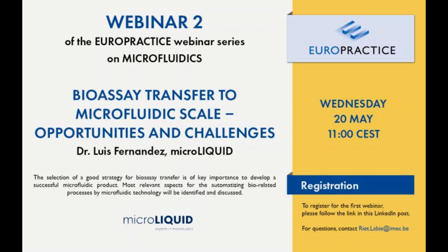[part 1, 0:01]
So good morning, everyone. Thank you for joining the second EuroPractice webinar on microfluidics. After the introduction session we had 2 weeks ago, we now start with more in-depth presentations related to the microfluidic breakdown parts that were touched upon last time. The one of today is about the bioassay transfer to the microfluidic scale, its opportunities and challenges, and will be presented by Dr. Luis Fernandez from microLIQUID.
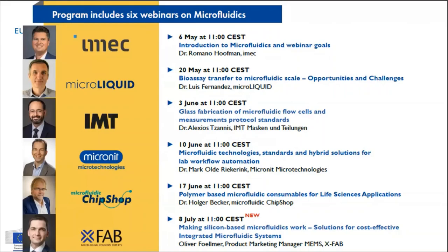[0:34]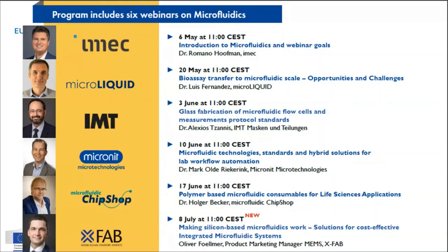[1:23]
Let me now introduce you to the presenter of today. Dr. Luis Fernandez is partner director and CTO of microLIQUID and has 20 years of experience on microengineering and microfluidic manufacturing. This includes in vitro diagnostic systems, drug delivery and tissue monitoring microdevices, cell culture microfluidic systems for organ-on-chip applications, and biomems. His research interests include both the generation of new scientific approaches to impact the biomedical field, as well as finding industrial and clinical solutions of biomedical research. He is also co-founder and partner of BeOnChip, a company dedicated to the development and commercialization of microfluidic devices for organ-on-chip applications. And he is partner of Ebers Medical Technology, a company dedicated to the development and commercialization of equipment for tissue engineering and organ transplantation.
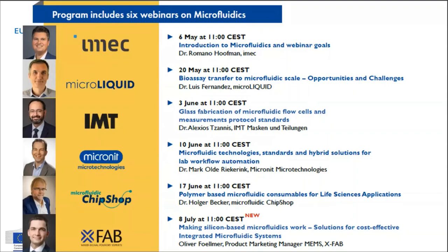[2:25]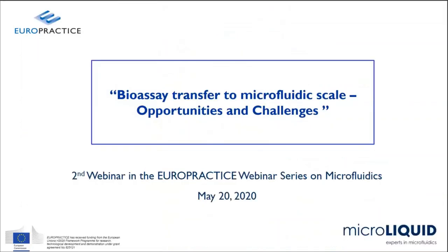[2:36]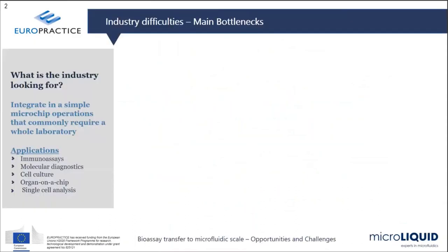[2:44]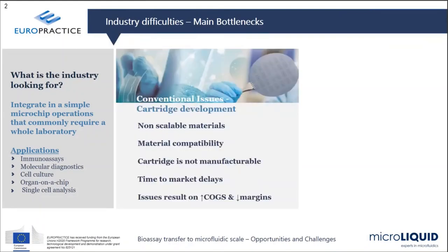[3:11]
It's a pleasure and honor to be here with you, sharing our knowledge on how to transfer a bioassay successfully to a microfluidic product. And this is exactly what we want to approach here. The question is, what is actually industry looking for when they're approaching microfluidics? And actually what we mean with that is that we want to integrate different operations which are commonly performed by a laboratory into a single device, a single chip for many different applications like immunoassays, molecular diagnostics, cell culture, and so on.
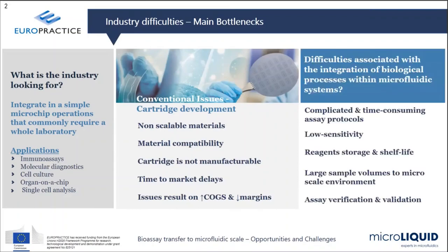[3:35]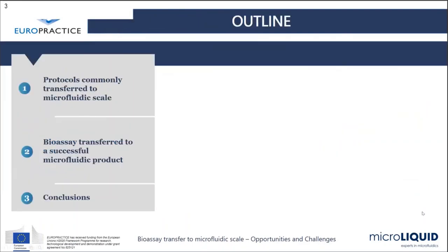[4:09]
There are conventional issues which have already been addressed for cartridge development, such as the use until now of non-scalable materials, how to get material which is completely compatible with the bioassay, with the protocol that we need to run in the cartridge, and how to manufacture that in a mass production way. But there are indeed difficulties which are not related to the microfluidics itself, but to the bioassay. So when we are facing the integration of a bioassay protocol within a microfluidic device, we also need to reduce the complication of the bioassay, to reduce the time, to increase the sensitivity, and to solve problems related with reagents storage and shelf life of those reagents. So this is what I'm going to address during the course of this talk.
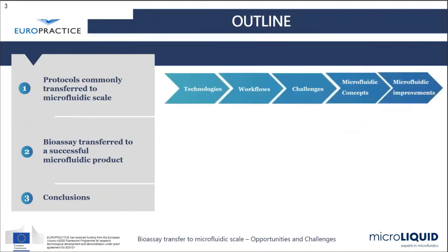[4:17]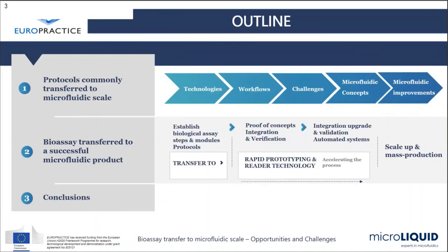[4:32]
I will divide the talk into 3 different parts. The first one would be addressing the different protocols and technologies which are being used in order to transfer a bioassay to a microfluidic device. That will be most of my presentation, like 3/4 of it. Then I will try to address where exactly this bioassay transfer is within the whole process of developing a microfluidic-based product, from the definition of what we want to achieve down to the mass production of the product and reaching the market, and then we will draw conclusions.
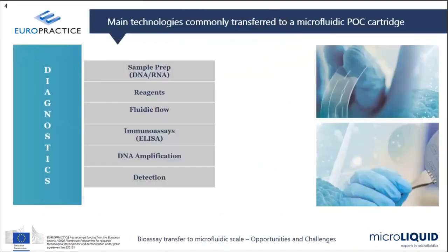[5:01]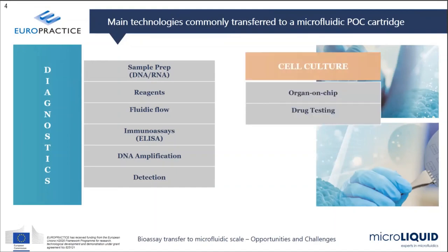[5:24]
So let's start with the different technologies that are available for the transferring of a bioassay. There are different applications. The most important ones are diagnostics. It requires a number of technologies which need to be addressed, like sample preparation, reagents storage, fluidic control, immunoassay integration or DNA amplification, and finally detection. But there are also others like cell culture related, some of them organ-on-chip technologies or drug testing technologies or human identification applications. But I will address diagnostics during this presentation. I think it's the most important field. I need to go somewhere to introduce the technology, and I think that's the best choice to go.
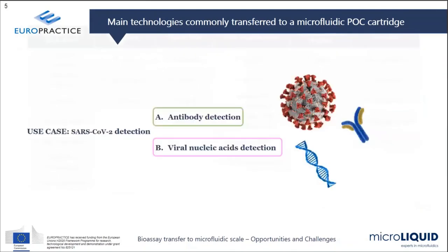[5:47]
So I will address during the course of my presentation diagnostics. And in order to make it easier to follow, I will not only just go through the different technologies which are being used for diagnostics, but I will try to bring two different examples. So during the course of my presentation, I will go through how I will make choices, as an example, how could we implement two different sensors based on microfluidics, one related with the detection of antibody related with COVID-19, and the other one is how to identify RNA material out of a sample, which is also very currently, well, it's kind of a hot topic right now.
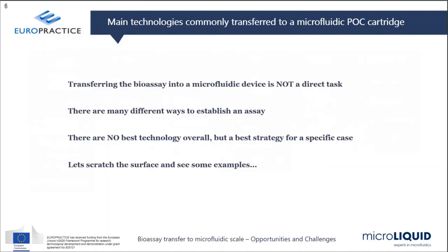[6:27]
So first, before I start, I want to introduce a couple of ideas in your mind. So first, transferring a bioassay is not a direct task. It's not like I have a bioassay, I want to do exactly the same thing that I'm doing in the laboratory, I want to do it in the microfluidic device. That can work, but it cannot work as well. So this is not the mindset that we need to approach when we are developing a microfluidic device. We need to take into account that we are changing the whole environment of the protocol, and it might require changes. So it might require that you have a protocol which is working in your laboratory and needs some kind of tuning or change of technology in order to reach a successful product in the microfluidic device.
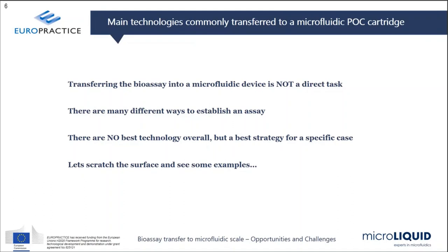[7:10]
And there are many different ways to establish a bioassay in microfluidics. It doesn't mean that when you are seeing a product in the market, it could not be done differently. Of course, it could be done differently. But there is always a better way, in terms of time consuming, final cost. So you need to be aware of all different strategies, to look at all different technologies which are available, to understand them all, and then to select the ones which are specifically matching best this application of use. And there is no best technology overall. So it's not like you need to go through immunoassay, which is an indirect way, or a direct way, or competitive. It's always related to both the bioassay and also the microfluidic environment.
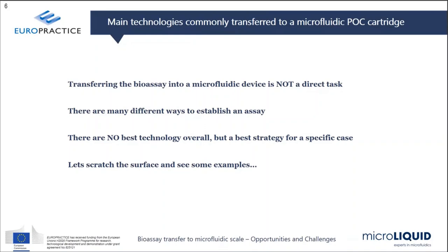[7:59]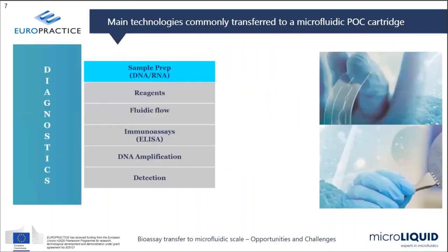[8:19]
So I will go through the course of this presentation about some of them more deeply. I will try to summarize as much as possible. I will just scratch the surface and show you some examples, but please take into account that these are just examples and many different choices might also be applied. So let's start from diagnostics.
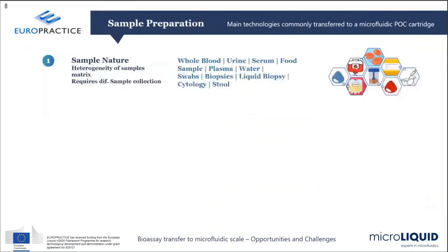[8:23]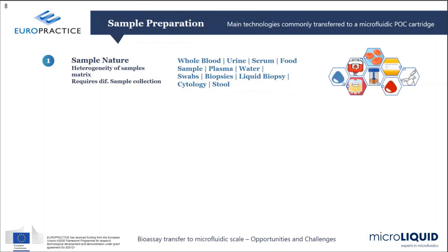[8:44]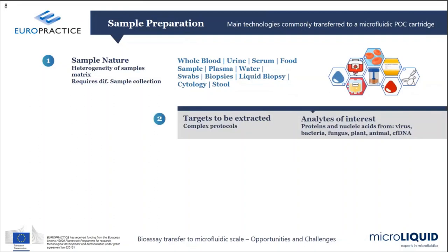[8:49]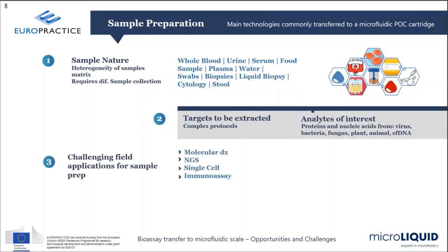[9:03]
So the first thing to do is sample prep. So when we are going to do the detection of something, the first thing of course to do is we need a sample which contains what we want to detect. And there are many different samples, of very different natures, which are heterogeneous, with different kinds of materials and molecules present. And we need to understand what is exactly inside, what are the different natures of samples. And then, of course, to completely identify which is the target that we need to extract from the sample, and then to perform the different protocols in order to get it from the sample that we already selected.
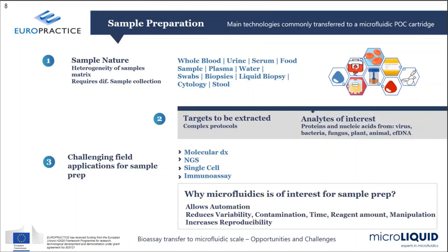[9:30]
There are different fields which are very challenging because of the heterogeneity of the sample. So when you work on molecular diagnostics, when you want to target RNA or DNA, it's not just this target which is involved within the sample. There are many different species or molecules which are also integrated into the sample, and you need to do things to extract exactly, specifically, that target of interest. And microfluidics brings into the sample preparation the automation of the whole protocol if it's required, but also the reagent amounts, because we are in microfluidics, the amount of reagents that you will require in order to perform this task of extracting the specific target that you want to select are reduced, and the manipulation is not required.
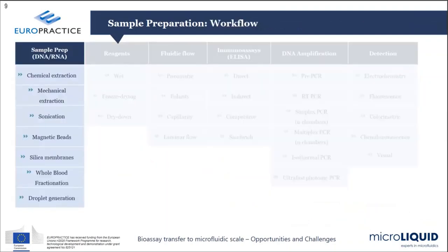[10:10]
Because you can automatize that, you can of course then also increase the reproducibility of the task. So when you are working on sample prep, there are many different technologies that you can apply. I mean, you have a sample, and then you can just use chemicals, for instance, to digest the cell in order to reach the DNA. You can use chemicals in order to breach the membrane and then make the DNA or RNA accessible. You can do the same thing by mechanical means, mechanical application onto the sample, and then breaking up the fungus or the cells or the bacteria that you want to reach.
You can also use ultrasounds in order to get it, or magnetic beads. Magnetic beads are tiny magnetic particles, on the order of a few micrometers in diameter, which are functionalized in order to specifically catch the target inside of your sample. And then, making use of permanent magnets, you can specifically trap these targets that you want to work with.
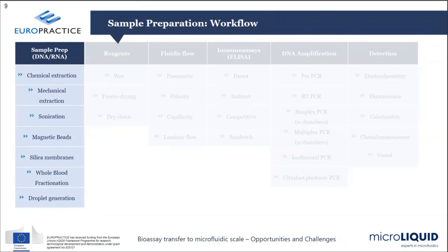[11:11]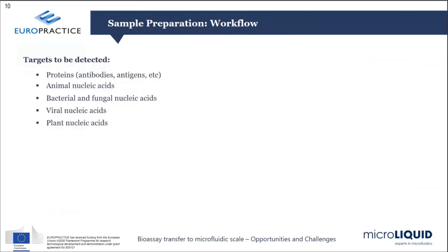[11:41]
Also, you can use silica membranes where your sample goes through and directly catches your target of interest, or you can use a fractionation of the whole blood, in case the blood is your sample, in order to, again, pick up your target of interest, or generate droplets which are catching specifically your targets, and also generating inside of the droplet the different reagents in order to perform the reaction.
So when you are working with sample prep, first identify what you want to detect, what exactly your target is. It could be a protein, it could be nucleic acids. Then take into account the heterogeneity of the sample that you are going to work with. Is it clean enough, or are there big cells, or is it all just composed of small molecules? Take that into account.
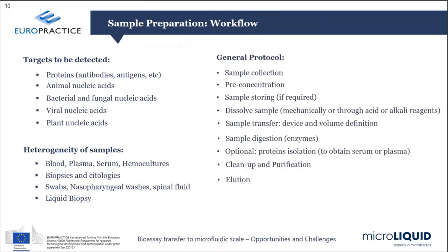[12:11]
And then you need to run a general protocol, which takes care of all the different natures of your sample. Maybe you need to collect it in a specific way, or you need to pre-concentrate it because it's very much diluted, or you need to store it. It might be that you also need to amplify it, or clean it up or purify it, or elute. You need to run a specific generic protocol, which is to be carried out in a microfluidic device.
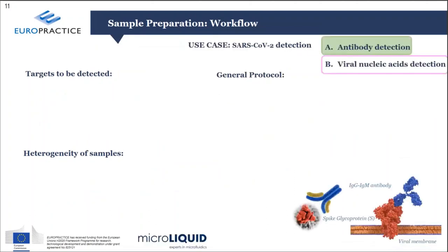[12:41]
So let's go for the examples. Let's start with that. How are we going to approach an antibody detection? As you know, when you have COVID-19, your body generates antibodies in order to trap the virus, and this is exactly what we are going to be looking for: the antibodies which would be present in the human sample, which relates to the presence of the virus in the patient.
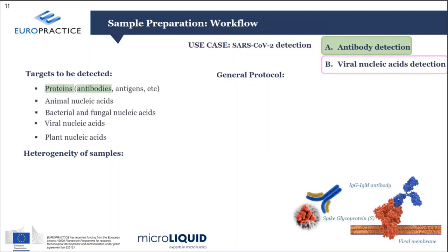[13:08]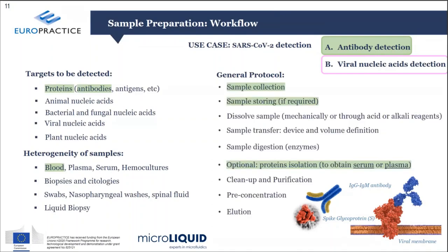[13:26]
And first, what we are going to target is the protein. It's the protein which is generated by the human when the virus is present in the patient. We can then select the sample. It could be a different one. Let's start with blood. So we will use a blood sample, and then we run a protocol.
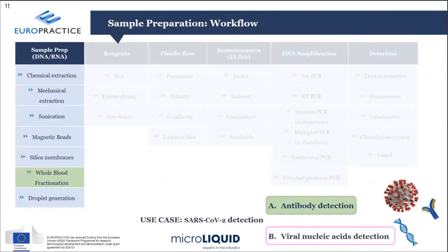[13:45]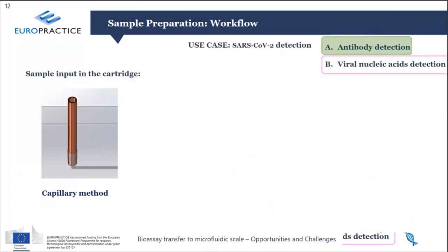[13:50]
A protocol that we can select as an example is: we collect the sample, we store it in a microfluidic device in order to perform the assay, and then we do the protein isolation. So we will catch the protein exactly from the general sample of blood. That would be, within the list I just described before, the whole blood fractionation methods.
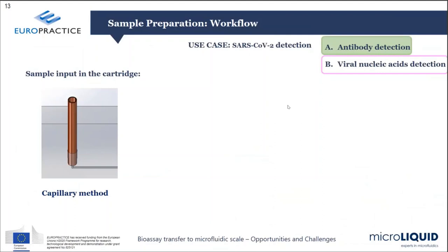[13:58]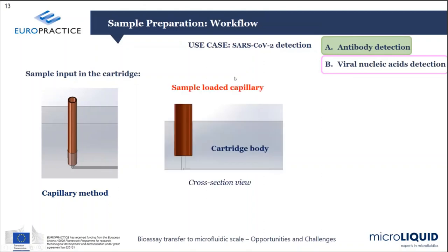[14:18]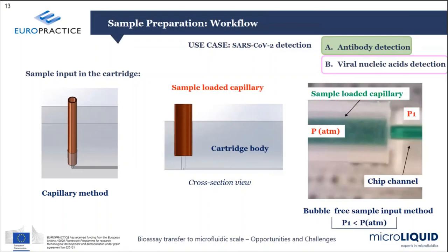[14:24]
One way to do this is to use capillary methods. There are capillary tubes available which, in direct contact with a droplet of blood, collect a specific volume of blood and integrate it into the tube. That could be easily integrated into the microfluidic device, and it therefore integrates the sample into the cartridge. There are many different things which need to be taken into account, how to integrate that successfully, how to make a hermetic input, how to avoid any bubble formation. But these are all technological approaches which can be completely solved.
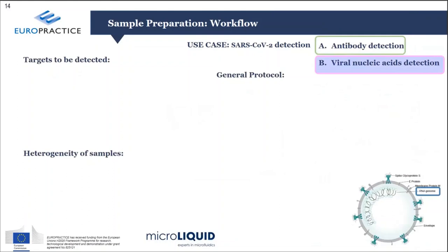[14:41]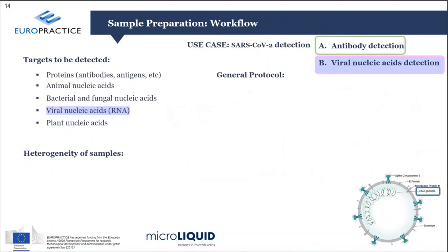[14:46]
And then if we move to RNA, of course, we go to viral nucleic acid detection. Here what we want to detect is the RNA material which is inside of the virus. So we are going to cut or detect the virus itself. So our target would be viral nucleic acids. And the sample that we can select, for instance, is a swab or a nasopharyngeal swab. That would be our sample, which is of a completely different nature than blood.
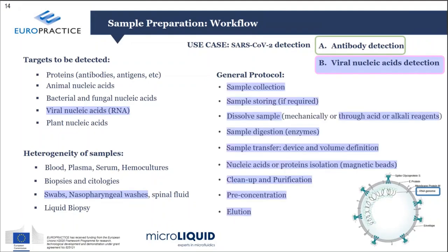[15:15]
And then, because we want to collect RNA which is inside of a virus, there would be a more complex, complete general protocol that we need to carry out. We need to collect the sample, and we also need to store it. We need to dissolve the sample in order to get access to the nucleic acid. We need to digest the sample again in order to cut it into pieces, then transfer that into the microfluidic device, and then amplify that, use magnetic beads in order to trap it in the microfluidic device, and clean it up and pre-concentrate it.
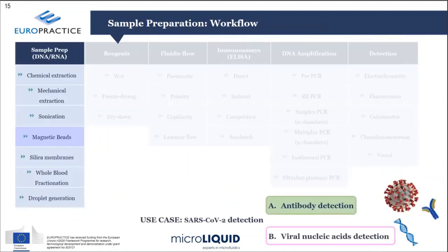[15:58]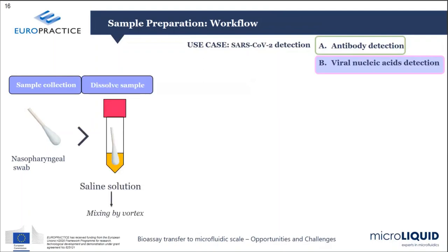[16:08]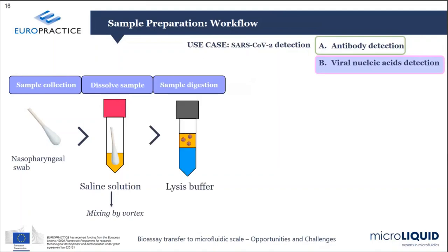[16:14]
So that would be our selection for RNA detection, magnetic beads. So how would that work in a protocol base? We will have a swab in order to collect the sample, and then we will mix it with a solution in order to get a homogeneous distribution of the sample within a liquid.
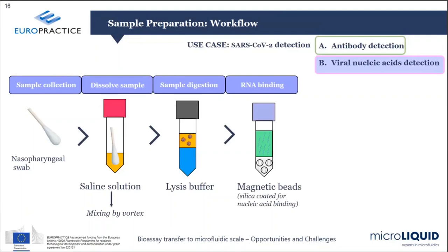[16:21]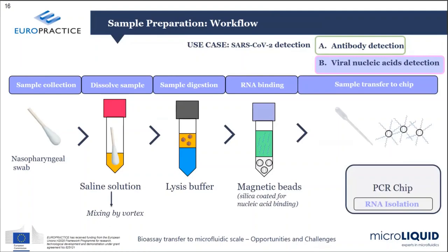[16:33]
We will then mix it with a lysis buffer in order to break the membrane of the virus and make the RNA accessible. And then magnetic beads will be present, which have been functionalized in order to catch any RNA material which is in the sample. Therefore, we can integrate this mixture into the microfluidic device, and then with the help of magnets, while the sample is going through, the RNA material already isolated will be caught and contained within a microfluidic chamber, where we will be able to work with it afterwards for the detection of the RNA.
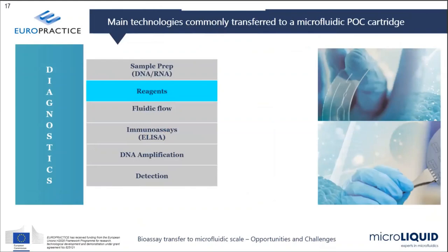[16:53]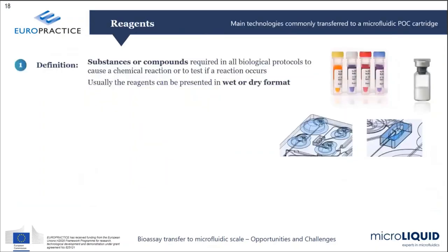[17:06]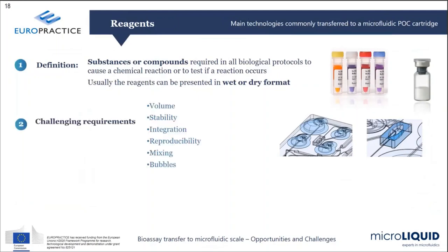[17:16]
So let's move now to the different technology that we will need next, which is the reagents. So we have the sample now, we have the targets, and now we need the different reagents in order to run the bioassay that we need to carry out with the microfluidic device. What is a reagent? It's just the different substances or compounds which are required in order to run a biological protocol, which is going to be used for the detection.
There are different challenges, like the volumes within microfluidic devices. They are small volumes that need to be controlled. They need to be stable because you want them to be integrated into the device, but they also need to be stable during the course of time. And you want them, of course, integrated, because otherwise you will need different bottles or other items around your chip, which you want to avoid as much as possible.
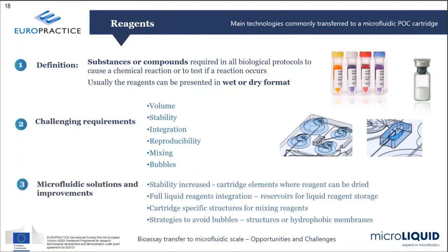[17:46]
So how is microfluidics bringing in a solution to that? The use of microfluidics allows you to make use of different methods, like drying the samples and then increasing the stability of these reagents. You can also have the capability to integrate the different liquids and the dried reagents within the microfluidic device, which makes a more simplistic way to perform the assay.
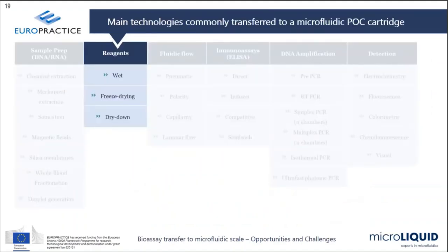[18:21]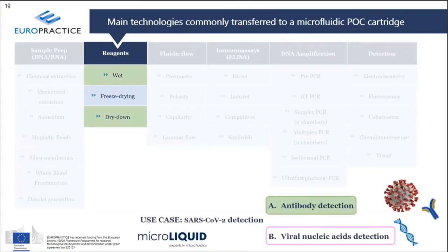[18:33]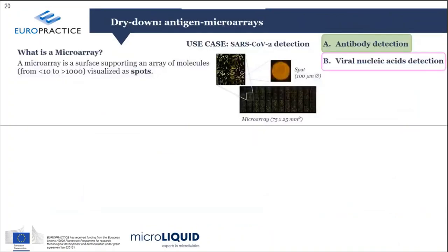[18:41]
There are mainly three ways of integrating reagents into microfluidic devices. There's wet, freeze drying, and dry down, and we will go through all three because we will use them in our example. So let's start with the antibody detection, in which case we can make use of both wet and dry down. And let's start with the dry down one.
So for the dry down, one of the clearest examples is the use of microarrays. What is a microarray? A microarray is an array of different spots, which include specific molecules which have been designed in order to trap our targets. And what is a spot? It's just a circle with a diameter in the order of 50 to 150 micrometers, containing many copies of the molecule that we have designed in order to trap our target.
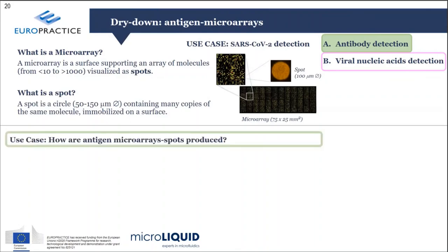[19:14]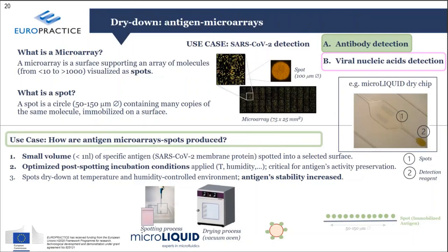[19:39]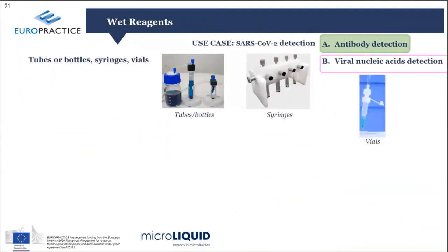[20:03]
So when we are going to use it for our example, as you see on the right, you see a chamber where we have deposited by automatic pipetting specific volumes of the molecules that we want to trap onto the surface, so that it will be ready to catch the antibody present in the sample. The way to do it, we first deposit it in liquid form, and then under specific temperature and humidity conditions, you are able to dry them down and have them present, as you see on the bottom right, so that when the sample goes through it, it will be able to catch specifically this antibody if it's present in the sample.
And then we will also make use of wet reagents. In many cases, you will need reagents for specific labeling or cleaning processes. You can run them using tubes, bottles, syringes, or vials, which are integrated into the point of care system, but externally connected. The volume of storage is high, so you can use them for several tests, and they are easy to develop. However, this approach leads to regular maintenance requirements in the point of care system, and a high risk of failure, also due to contamination.
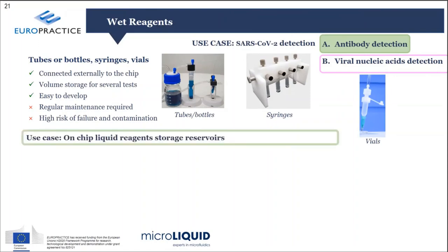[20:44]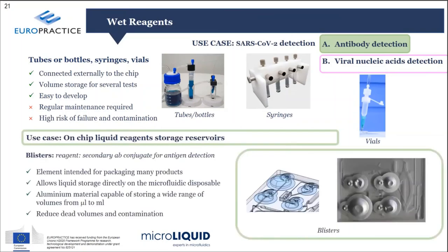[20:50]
So in our case, we are going to make an example where we don't make use of this, but we make use of blisters. Blisters are specific containers, mainly made out of aluminum foil, where they store specific amounts of liquids, which are required within the course of the microfluidic protocol. That allows a storage of the liquids which is hermetically closed, and it's opened exactly at the moment which is required in order to run the bioassay. So the point of care system opens up the blister in order to get the liquid available at the specific moment.
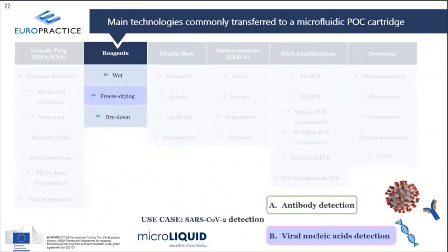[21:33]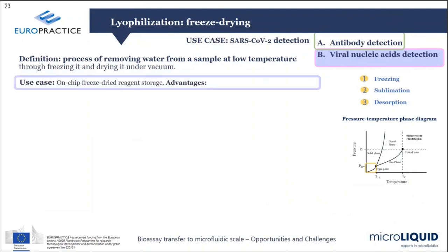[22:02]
So, the other one which is left is freeze drying. So what is freeze drying? It's just a different way to completely remove the water present in the reagent by making use of low temperatures. By controlling temperature and pressure, you are able to go from a solid state, freezing down the reagent, up to a gas state without going through the liquid, which gives you better stability of the reagent.
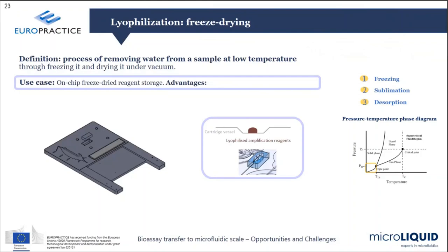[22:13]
This is how it is implemented into the microfluidic cartridge, which is complex. We mainly make use of specific vessels which integrate the specific lyophilized reagents that you want, so that you can reduce the cost of the lyophilization process, as the vessels are much smaller than the complete system. Then you just need to integrate these small vessels into the microfluidic cartridge, which is specifically designed for running the protocol.
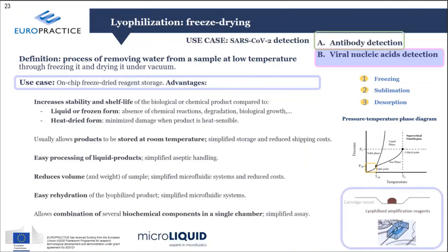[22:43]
There are many advantages to using freeze drying, even though it's more expensive than the conventional dry down. But as I mentioned before, the main one is the higher stability of the reagents performed with the freeze drying protocol, and also the capability of integrating several different combinations of biochemical components within a single chamber, in a single shot.
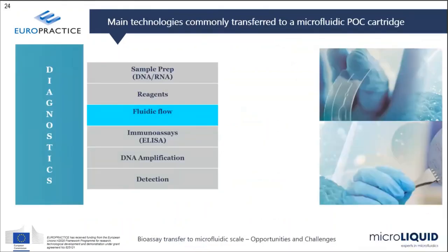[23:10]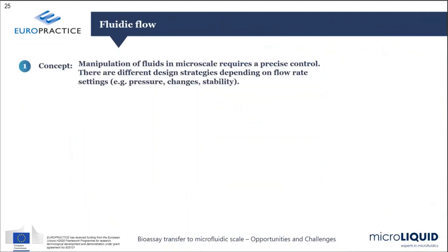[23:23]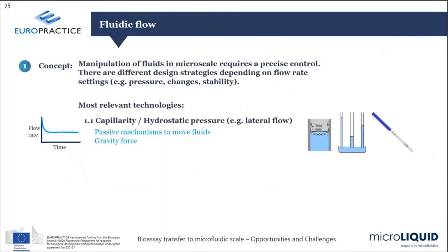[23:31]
Okay, so we have our targets, we have our reagents to go through the protocol, and now we will need fluidic control in order to run the fluidic protocol within our microfluidic device. First, the concept is how we are going to manipulate fluids in the microscale environment. There are many different ways to achieve that. Let's go through some examples.
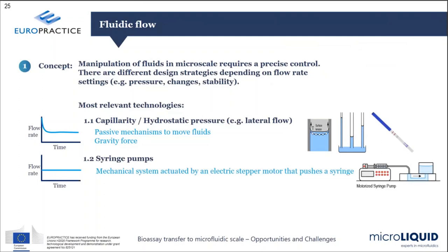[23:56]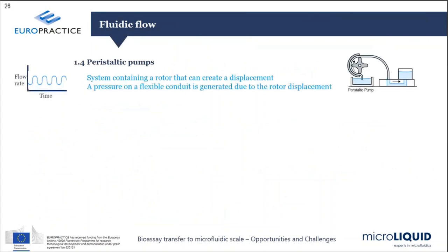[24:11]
First is capillary or even gravity forces. The capillary would be like the capillary tube I mentioned before, as an example of how to integrate blood into the microfluidic device, or making use of hydrophilic surfaces to drag your sample inside the microfluidic device. You could also make use of syringe pumps. You can make use of pumps to create vacuum at your outlet, and therefore drag your liquids through the microchannels. You can also make use of peristaltic pumps, which is not more than just a rotor applied onto a flexible tube in order to displace the liquids.
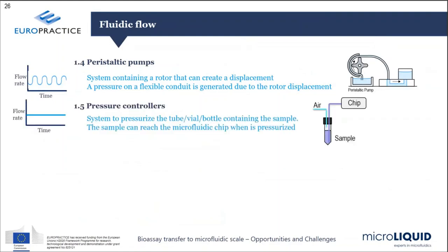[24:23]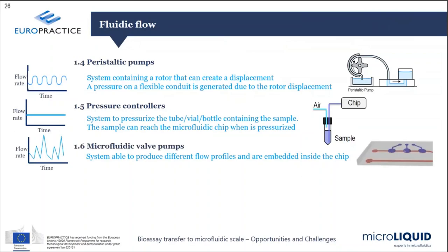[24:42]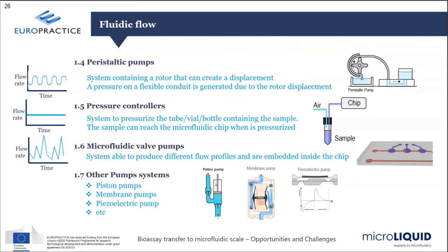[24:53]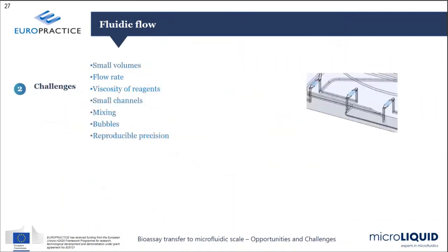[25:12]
Pressure controllers are just the control of the air pressure inside a specific compartment of the chip. By applying extra air pressure to this reservoir, the liquid gets pumped into the chip. Or you can even integrate microfluidic valves into the chip in order to get a constant flow through the chip. And of course, there are many other components that you can externally plug into your system, like piston pumps, membrane pumps, piezoelectric pumps. They all give a different profile, and they are all good. It's just about making the right choice for the specific bioassay you want.
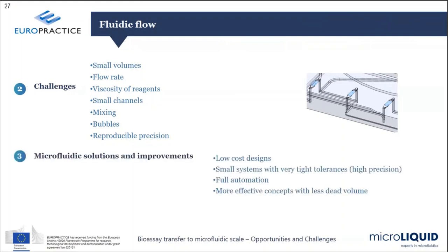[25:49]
The challenges are that you always need to work with small volumes. Flow rates are also very, very small, so they are very difficult to target in microfluidics. Also, because of the heterogeneity of the reagents, some samples are very viscous and not suitable for certain applications or certain pump control technologies. And you always need to track these liquids inside a small channel, which integrates fluidic resistance, which is not always easy to achieve. So microfluidics allows you to design, in a low cost way, different strategies for fluidic control, and it also allows you to reduce the tolerances on the small systems which are required.
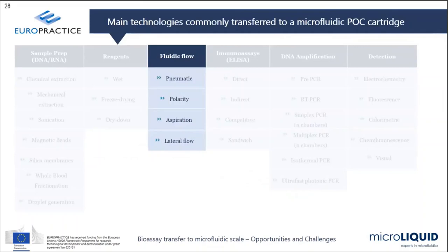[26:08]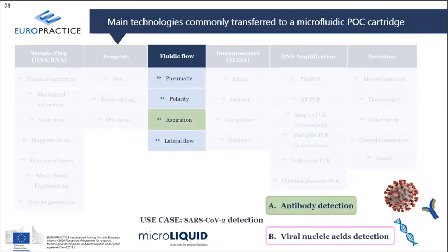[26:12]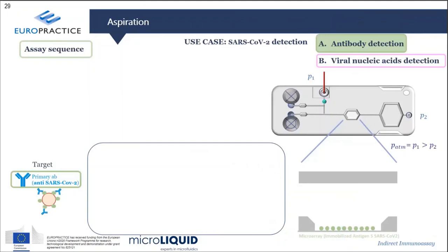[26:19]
So with all the different options available for fluidic control, for our case in antibody detection, let's take for instance aspiration. How would we implement that into a microfluidic device? You see now on the top right, we have a microfluidic device where we already integrated our capillary tube on top, for the integration of whole blood. We have two blisters on the left, which are the reagents that we will require.
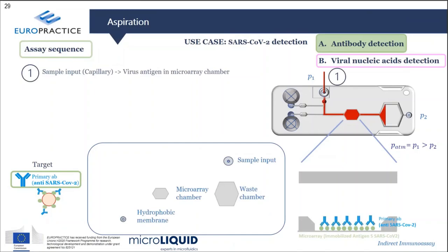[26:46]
And we have the dry reagent right in the chamber, if you see at the bottom right, where we have already deposited our antigen. So first, what we would do is apply a negative pressure at our outlet, which is at the right of the chip, that's P2, so that we drag the sample into our chamber of interest, where we have our antigen. And there, what we would do next is apply a pressure in one of our blisters, so that's a secondary antibody.
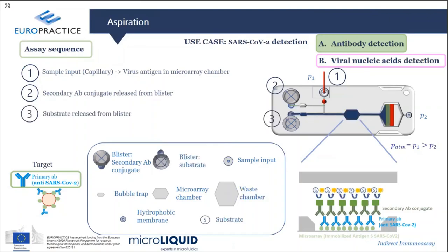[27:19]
It goes through the chamber again, which has been labeled, and it's specifically designed to be attracted to a different part of the antibody, which is accessible at the chamber. Finally, we will use the second blister to deliver substrate, which will react with the label that we have applied to the second antibody in order to perform our final detection.
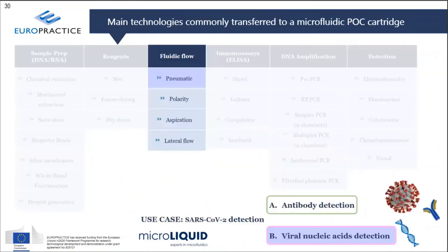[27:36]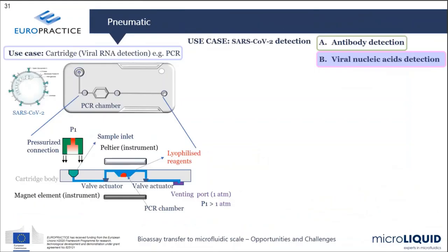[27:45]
So that would be an example way to integrate control into the microfluidic device. And then let's move now to a pneumatic approach that we will apply to the RNA detection of the virus. Here you will have a different option for the chip, where on the top left you have an inlet where we will apply our sample. As you see, from the point of care system we will apply a controlled pressurized air connection, and by applying a higher pressure of air, we will drive the liquid through the channel to get into the PCR chamber, where we will want to address our targets.
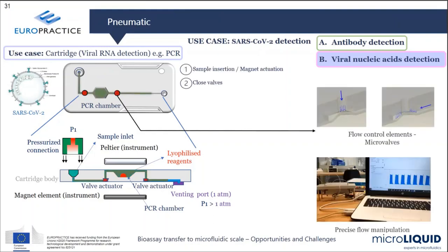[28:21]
We insert the sample into the chamber, and then we will also actuate valves at both sides of the chamber, which are in this case flexible membrane based. We will make use of magnets to trap the magnetic particles that we have used for the collection of our targets. And we will run our amplification protocol, which is based on thermocycling. Because we are going to use thermocycling, that will increase the pressure within the microchamber. And that's the reason why we need these two valves, at both sides of the chamber, to avoid the liquid in the chamber getting out of the chamber during the thermocycling process.
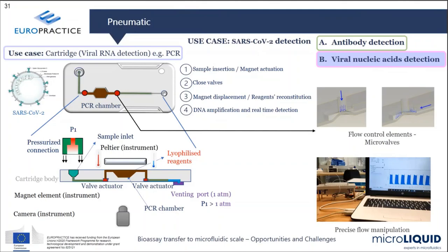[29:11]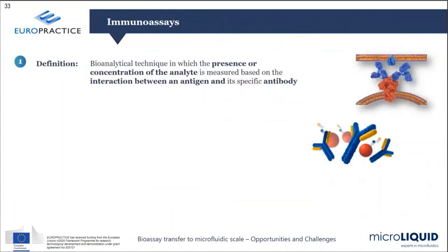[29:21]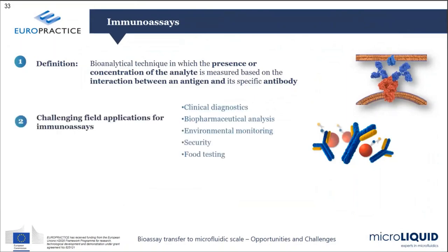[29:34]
So let's move now to the immunoassays that could be performed in a microfluidic device, the different options that we have. An immunoassay is by definition an interaction between two different molecules, the antigen and the antibody, in order to trap a specific target. It could be the antigen or the antibody, it could be both. And the challenging applications for immunoassay are not only clinical diagnostics, but also
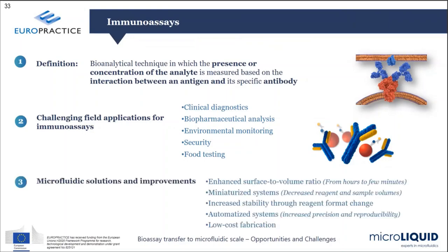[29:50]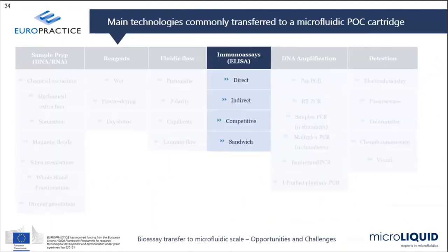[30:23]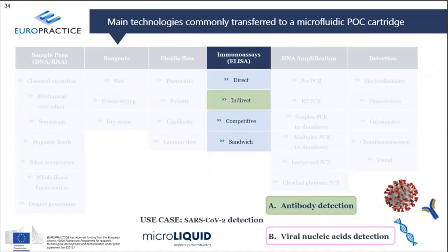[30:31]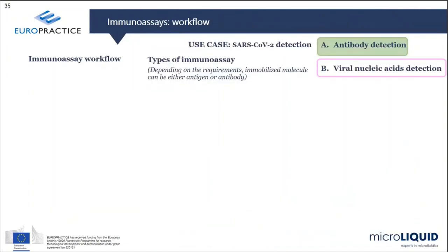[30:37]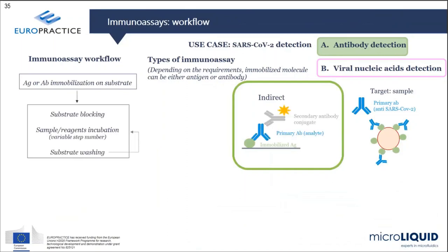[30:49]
We will address the indirect one through our antibody detection example. So first, as we described before, we will have our antigen on the substrate. And we want, as we mentioned before, to attract our target, which is an antibody. So this antibody will get dragged into the substrate and will be trapped by it. And then the second antibody, which was labeled and placed in the blister, if you remember, would be the method of detection for the presence of our antibody. That is what is considered the indirect way of performing an immunoassay.
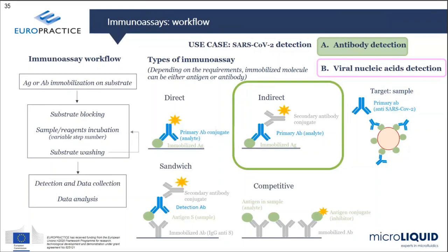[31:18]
But it's not the only one. There are different ways to do this kind of immunoassay detection, depending, of course, on whether you want to detect the antibody or the antigen. And they are different. It's not that one is better than the other. You need to reflect on what your bioassay is and what your microfluidic environment is, and then select the one that is better for your specific application.
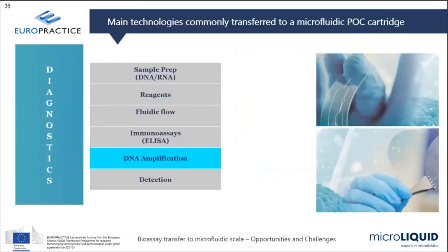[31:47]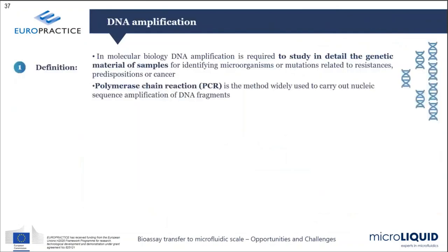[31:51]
Let's move now to the DNA amplification technology. DNA amplification is mainly performed by PCR, which is a method to multiply the fragments of DNA present in the sample.
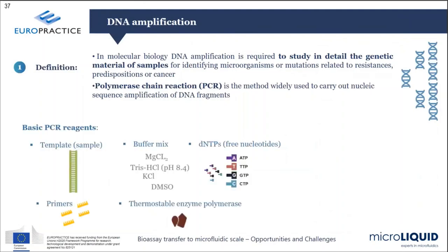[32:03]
This technique requires different reagents to be installed into the microfluidic device. First, of course, you need the sample. But you also need different molecules, such as the buffer mix, in order to enhance the reaction. You need, of course, the nucleotides, which are required in order to manufacture this DNA sample again, in order to amplify it. You need primers, which specifically bind to specific locations of the DNA that you want to amplify, so that you are sure that you are only amplifying the DNA fragments that you want, to check whether or not it's present in your sample. And then you also require the polymerase, which starts this reaction.
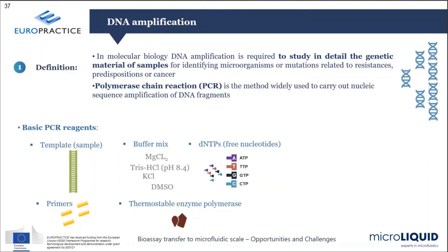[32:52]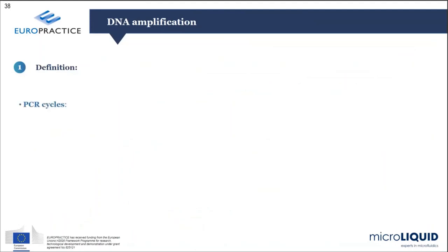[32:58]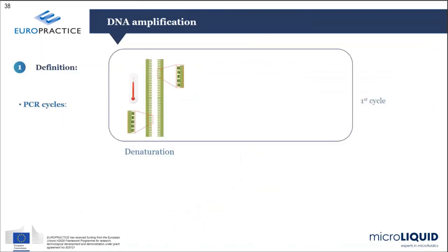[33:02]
So you need to mix all these molecules into a liquid and then perform the protocol. How is this protocol? As I mentioned before, it's a thermocycling protocol, so it requires changes of temperature. At the beginning, the sample is there, a double strand of DNA coupled together, and then you increase the temperature in order to detach this double strand of DNA.
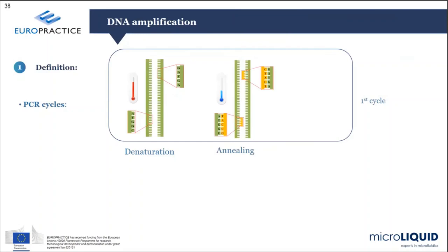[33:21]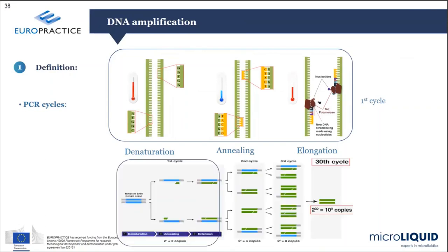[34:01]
Then by reducing the temperature, the primer is allowed to go to these specific spots, which have been designed to target specific parts of the DNA you want to detect. And only if the primers find exactly the complement of their design will they be able to be trapped onto the DNA. And then the polymerase reaction starts, integrates and fills in the rest of the strand by making use of the oligonucleotides which are present in the mixture. And by repeating this several times, you will have an exponential growth of the specific parts of the DNA which have been designed to be amplified.
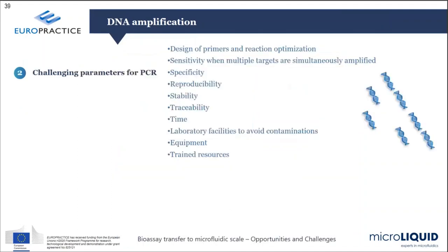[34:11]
So there are many different parameters which are challenging for PCR detection, for PCR amplification. First, of course, is the design of the primers. They need to be specifically designed so that they only bind to specific parts which are only present in your target and not in any other DNA or material which might be present in your sample, so that you have specificity. It also needs to be reproducible and very stable, so all these different molecules need to be stored in a way that they are able to work for different times.
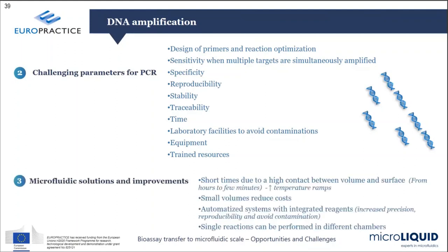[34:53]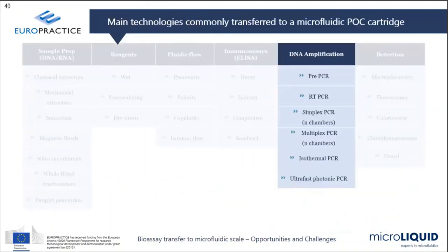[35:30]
And what microfluidics brings is, because of its nature, we make use of small volumes of liquids, which reduces the time required to heat up and cool down your reaction. Because the volume is reduced, the thermal inertia of the protocol will be lower, and then you will be able to reduce the time. Also, because of the small volumes involved, all the reagents that you require will be reduced, and that will reduce the overall cost of your assay.
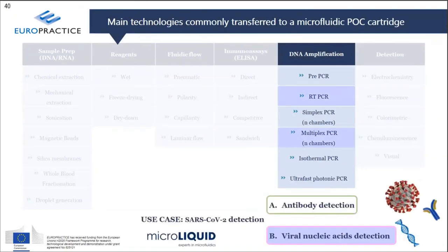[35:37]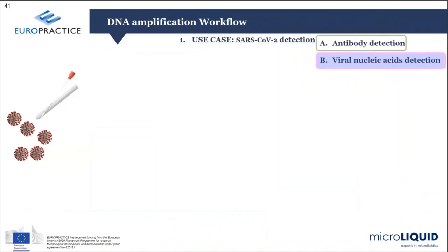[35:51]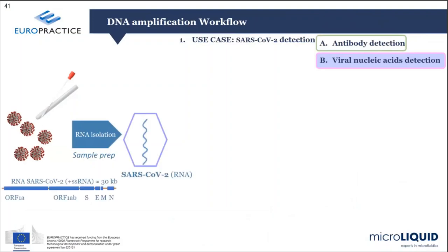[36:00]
So there are many different ways to perform the PCR protocol, but we will select one: reverse transcription kit-based PCR in order to perform the step from RNA to DNA, and then multiplex PCR in order to integrate controls. So let's look at how that would be. So we have our magnetic particles with the RNA coming from the sample, and we have isolated that in the microfluidic chamber. So now we have available our RNA that we want to amplify.
We will need to mix that with two different RNA samples. One is a human housekeeping gene, which is always present in human material, a human sample. And this is just to make sure that the sample was collected properly. And then you will also introduce an RNA internal control, just pieces of RNA which will always be amplified by specific primers, just to make sure that the thermocycling protocol was running correctly.
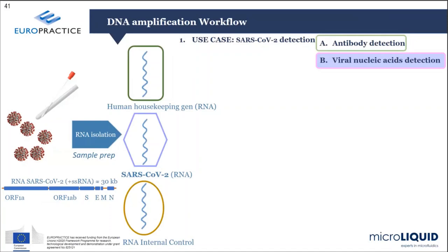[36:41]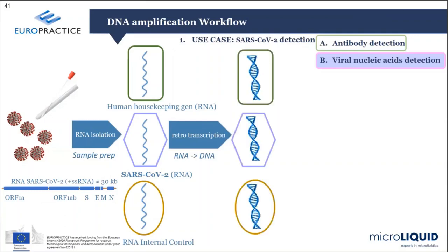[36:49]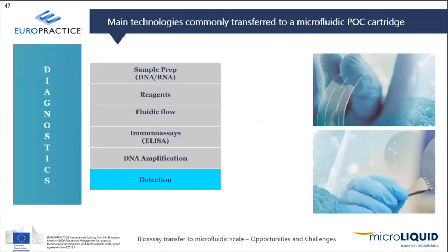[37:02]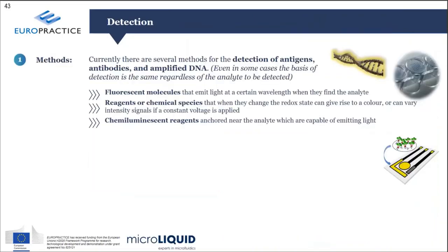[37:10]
So once we have mixed that, you make use of reverse transcription just to translate RNA material into DNA. And then once we have the DNA strand, we will run the protocol that I just described in order to amplify that, and get multiple copies of it so that it can be detected afterwards. And that goes to the final stage of the bioassay, which is the detection. There are many different ways of performing detection. The detection is just a way to integrate a transducer. We have performed the detection of something, and we want to carry a signal which is easily read by a point of care system.
The most effective ways to do that are making use of fluorescent molecules, which are capable of emitting a specific light at a specific wavelength once they have been excited by specific light from the point of care system. Also, reagents or chemical species, which are chemicals able to produce changes in color or voltage signals, or chemiluminescent reagents which are able to emit light when the reaction is taking place.
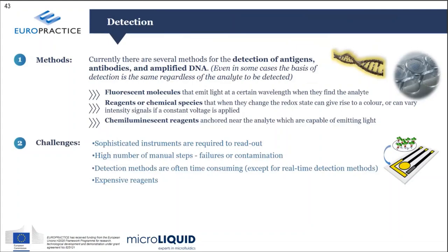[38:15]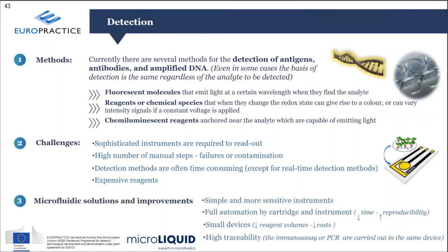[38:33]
The challenges here are that they mainly involve sophisticated instruments when you are making use of these transducers. They also require a high number of manual steps, and the detection methods are always time-consuming and require expensive reagents. So what microfluidics can really bring to the table is the simplification of these sensitive instruments to integrate, to provide full automation of the protocols, and to reduce the size of the devices.
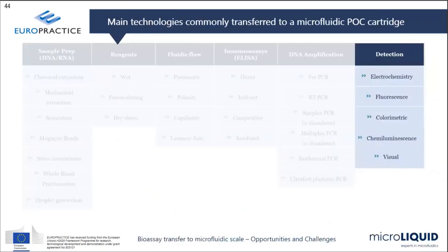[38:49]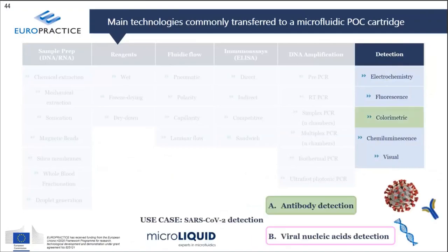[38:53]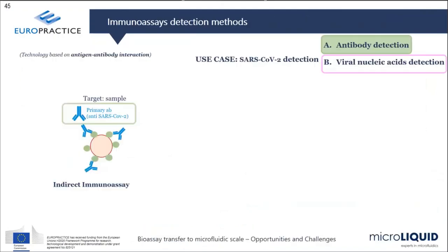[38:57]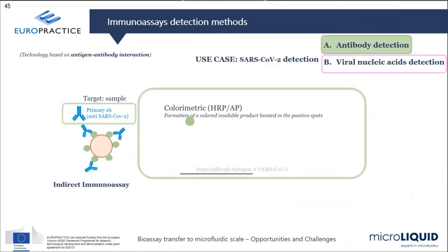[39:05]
So let's go through our examples, and from the different ways to detect, let's pick colorimetric detection for the antibody detection, and let's see how that would work. As you remember, what we want to detect are the antibodies. So we will have our antigen located as a dried reagent on our substrate. We will then integrate the sample and the secondary labeled antibody, which carries an HRP molecule, which is known for generating color in the presence of a specific liquid substrate. So in the end, you will be able, by optical means, to check whether the result is positive by checking whether or not there was color at the specific locations where the antigen was located by the dry-down method.
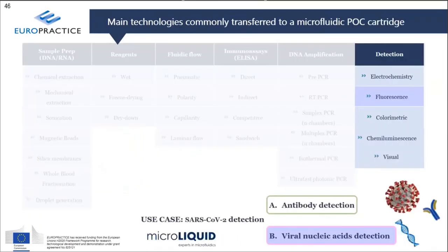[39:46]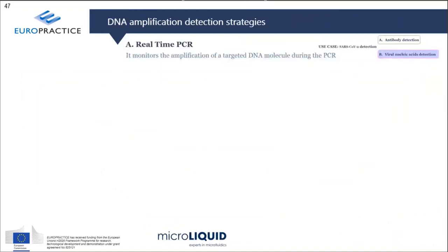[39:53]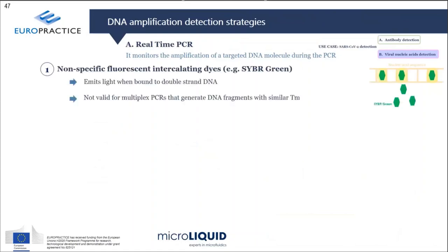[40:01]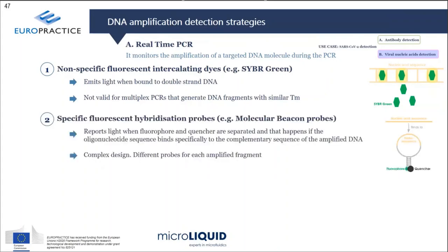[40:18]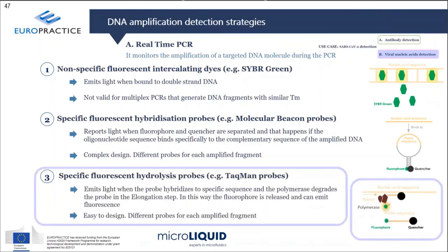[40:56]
And now let's go to what we could do for RNA detection, and let's pick fluorescence for this case. There are two ways to perform fluorescence detection in a PCR. One is what is called real-time PCR. Again, there are different ways to integrate that. One is to integrate non-specific fluorescent intercalating dyes, which are specific molecules that bind to DNA fragments present in the sample. Or you could also make use of what are called beacon probes, which are molecules integrating both a fluorophore and a quencher, which traps all the light coming from the fluorophore. The binding between the two is made by a probe sequence that specifically fits the DNA fragment which is going to be detected. Or what are called TaqMan probes,
which could be, for example, the one of choice for these applications. A TaqMan probe is a molecule which puts together a fluorophore and a quencher. Only in the presence of many copies of the target does the probe sequence bind to the DNA and, as the polymerase chain reaction goes through it, break this molecule, so the fluorophore is free and the light coming out of it is available for optical detection by the point of care system.
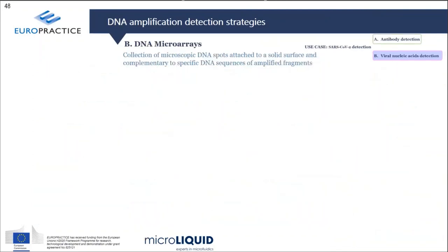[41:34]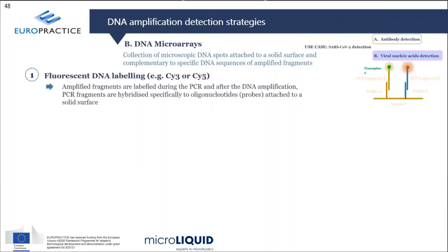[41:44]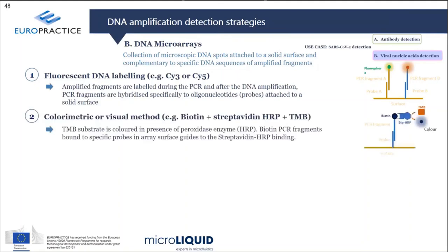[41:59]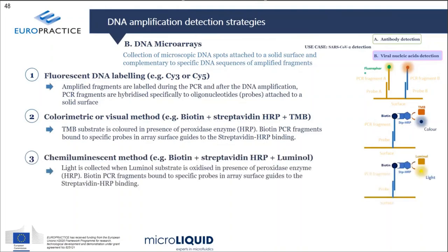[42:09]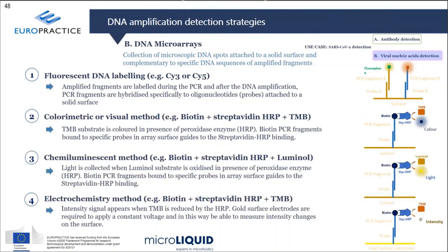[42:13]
You can do the detection not only by real-time PCR, but also by DNA microarrays. We could integrate probes which specifically bind to the DNA material that has been amplified by the PCR, and then label these specific molecules with fluorescent DNA probes. Or we could again make use of molecules which provide a specific color in contact with a specific substrate, or molecules which emit light in contact with a different substrate, or provide changes in voltage and current by redox protocols.
All these are different ways of performing a detection, and it's not that there is one best, it's just one which is better for the specific application that you may require. What is important is that you know them all and you know their advantages and disadvantages so that you can select and pick the one which is best for your specific application.
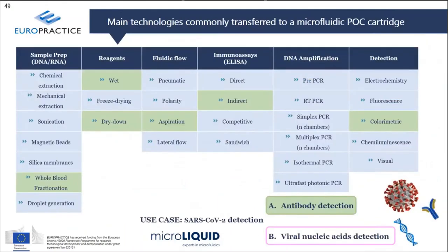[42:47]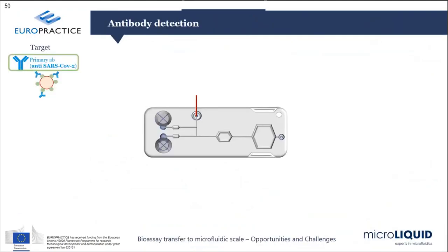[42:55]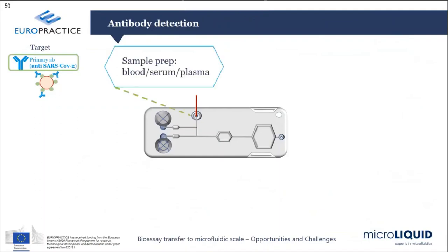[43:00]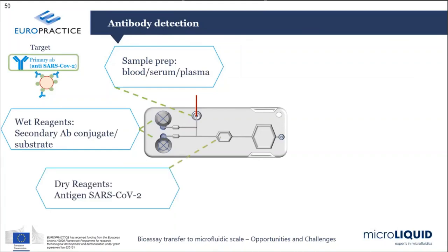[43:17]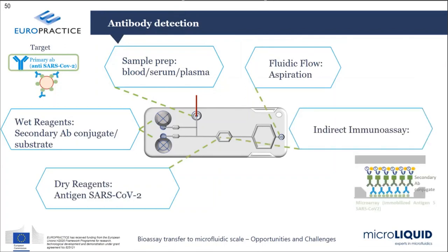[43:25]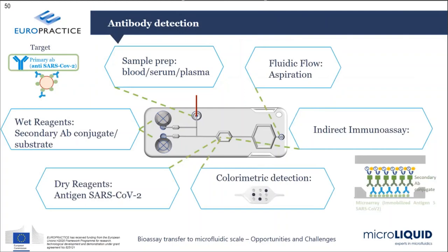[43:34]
So let's summarize the whole protocol. What we have chosen for the antibody detection, for instance, let's go through the whole protocol. We have this chip as an example, where we will first integrate our sample, which is whole blood, into the microfluidic device, making use of capillary tubes. We will have wet reagents, which will include the labeled secondary antibody and the substrate in order to perform the detection. And we have a specific chamber which has integrated dry reagents in order to trap the antibodies. Now, making use of aspiration, we can integrate the sample and then the second antibody and the substrate in order to perform the specific bioassay, and then finally detect by optical means the color of the bioassay reaction.
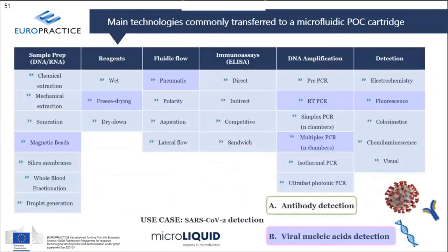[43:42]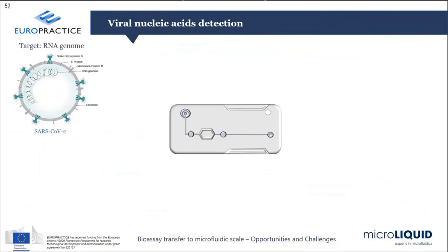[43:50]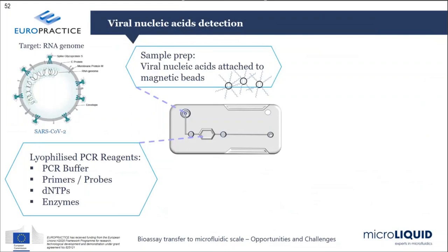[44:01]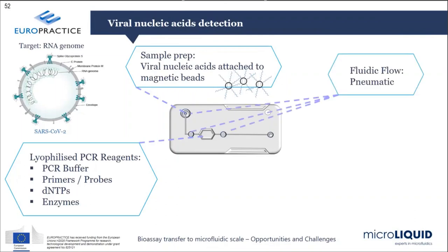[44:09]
And then let's summarize what we did for the RNA detection. That is with the example of the chip that we will have, where we will integrate first the magnetic beads which already integrate the RNA from the sample preparation. We have a specific chamber which already integrates lyophilized all the reagents required for the PCR amplification that we discussed before. And we will have these two microvalves in order to make sure that the reaction takes place without spreading the liquid through the chip.
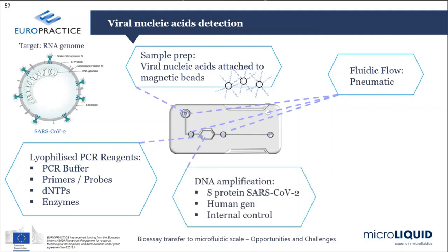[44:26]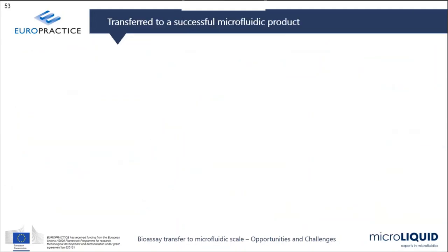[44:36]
And also we make use of air pressure control in order to drag the sample into the chamber. We will run the DNA amplification by thermocycling, and then we will make use of TaqMan probes in order to perform an optical detection. So these are examples of the bioassay.
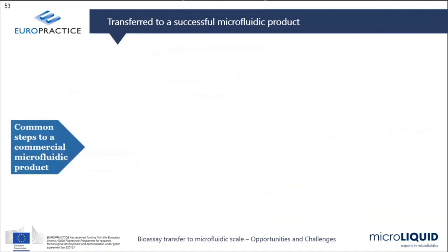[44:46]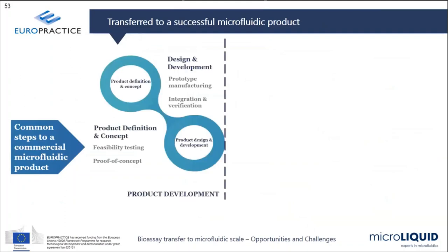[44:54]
Let's move to the second part of the talk, where we are going to discuss how these are integrated into the normal course of product development. So when you are running a product development in microfluidics, first you need to do a product definition and concept phase, where you state what the proof of concepts are, state what the bioassay is that you want to carry on, and perform a specific test in order to develop it.
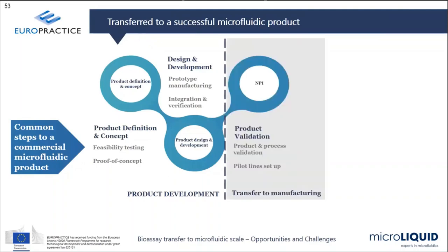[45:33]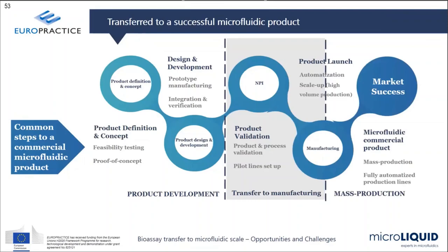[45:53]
Then you need to run into the design and development phase, where different specific samples or devices are being manufactured and integrated into a final product. So you have a final product which has been developed during the course of the project. This product needs to go to the next phase, which is new product introduction. So make sure that it's completely validated and compatible with the manufacturing processes, so that you can then run a mass manufacturing phase in order to reach mass production and reach the market successfully.
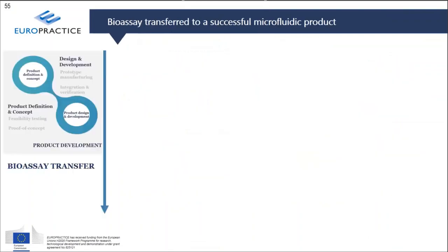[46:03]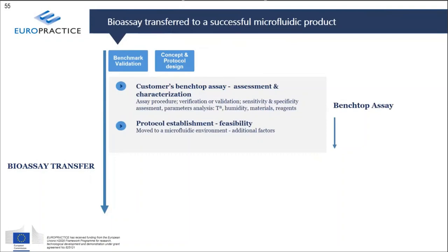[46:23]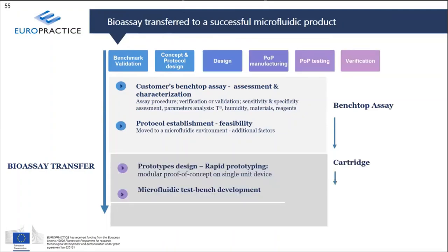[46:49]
So the bioassay transfer is exactly at the beginning of the phase when you are doing the product definition and concept, and also the product design and development. At the beginning of this phase, what you need to do, of course, is first to get the benchmark validation. So the customer has already implemented a protocol which is running in the laboratories, and you need to study that very well, make sure that all the different steps which are required are installed into the facilities where you are going to do this transfer from the bioassay into the microfluidic device, and work in a combined manner between the engineers, the biologists and the biochemists to make sure that the transfer from the laboratory is successful within the microfluidic device, taking into account all the concepts and all the protocol designs from the microfluidic point of view.
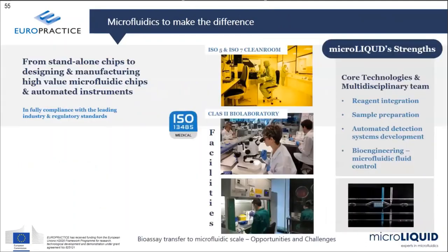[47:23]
So you design specific prototypes, which are just single modules, differentiated as single technologies that we went through at the beginning, just making proofs of concept that they run successfully, and then you integrate them together into a final prototype, a product development, which will then be transferred into new product introduction, and then mass production facilities in order to successfully reach the market.
And the main conclusion of the talk is that in order to run successfully a transfer of the bioassay into the microfluidic device, it's not just that you want to target the microfluidic engineering of the protocol, but you need to have an overall knowledge of biology and biochemistry, all the different technologies which are available, integrated into the development team, to make sure that you make the right choices, so that you not only take into account the protocol and run exactly the protocol that you have developed in your laboratory, but you also take into account everything which the microfluidic world brings as a perspective, and to make sure that the time and the cost of the final products that you have developed are reduced as much as possible.
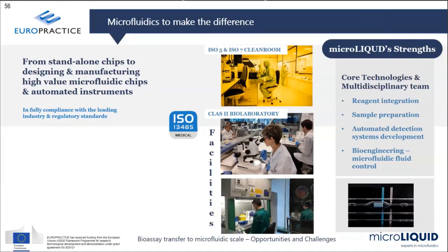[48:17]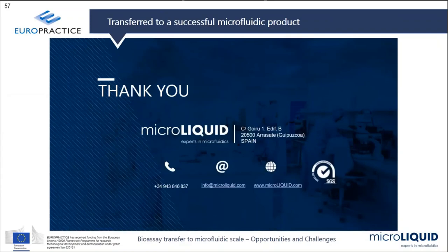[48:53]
We have that very clear in microLIQUIDS. We have facilities, not only clean room facilities for the manufacturing of the microfluidic devices, but we have specific facilities for a biolaboratory, so that will allow us always to bring every laboratory protocol which is coming from our clients in order to install it into our facilities, to work with it, to integrate it as a benchmark, and then to transfer that step by step, making sure that you are making things right and making the right choices within the microfluidic environment. And with that, I will finish my talk.
So I have one question so far. It says, assuming localized surface functionalization of biosensor chips, what resolution can you offer? How closely spaced transducers can you functionalize on a chip with an array of sensors?
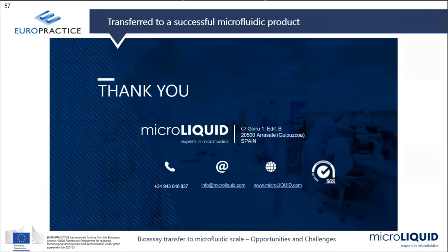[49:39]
Well, it's more or less what I explained before in the microarray section. Mostly what you can functionalize are dimensions in the order of a few tens of micrometers, between 20, 30, 50 micrometers and above. And then you can specifically deposit different liquids with different molecules at these locations. But these are the most used ways to perform functionalization of surfaces.
Yeah, you refer to the spot sizes that you mentioned earlier then? Yeah, yes. Okay, great. Yes, there are a few practical questions still, but I will answer that by mail.
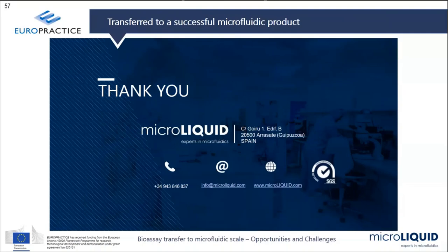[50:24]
Then one more question maybe. For future development of new applications, where do you see the highest need for more research or more knowledge? Is it in the sample prep, the reagents part, or in the detecting phase? Do you have a view on that, or is it all equally important? Well, they are equally important.
The thing is, some of them might be done externally, and in the case of urgency, it's different. It's just the case of the specific market that you want to achieve. For instance, sample preparation is of key importance in order to make a successful microfluidic product. But it's always true that you can perform that specific part outside of the microfluidic device. Now, in some cases, it doesn't really make sense and you need to integrate them. But in some cases, you can do it.
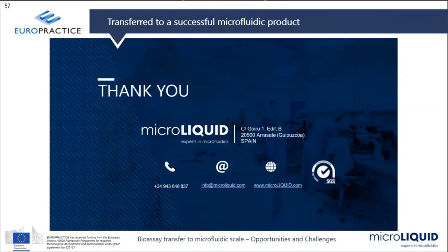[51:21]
Rather than other specific cases like reagent integration, it's always a need. So you always need to integrate these reagents which are required for the bioassay into the microfluidic device. And that is of key importance, and that's where more technology needs to be developed. Right now we have a number of solutions in order to get it done, and there are a number of products that we and others are manufacturing, but there will always be a need for that specific technology.
Okay, thank you. One more question popping up. Just a second. It's a very specific question. Do you have an example of any wound healing applications or solutions? Wound healing? Wound healing? How is that?
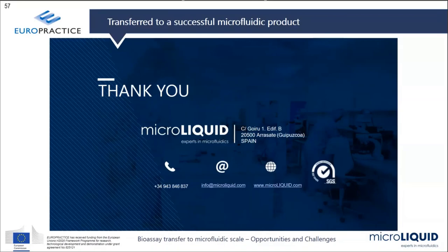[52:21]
Yeah, well, for wound healing, that's the organ on chip kind of application when you have cell cultures. For microfluidic devices, what they usually make use of are microfluidic devices where you integrate cells and you generate a monolayer. It could be a complex 3D or 2D or whatever. And then you perform a scratch so that the cells are removed from a specific location, and then you let the rest of the cells cover that specific area. There are specific chips in order to perform that, which can be used differently.
You allow the user to scratch the surface manually, or you can also allow the user to apply specific voltages to detach the specific cells from specific locations, and then allow the different cells to grow, and then study how the cells are growing again in order to fill the area which has been removed. Those are the specific devices I know about for wound healing.
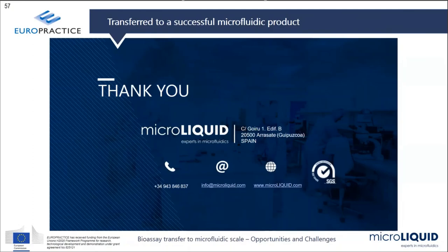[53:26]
Yeah, okay, thank you. And then one last question maybe. What are the technical challenges of doing every step in a chip? You mentioned sample preparation was made outside the chip, also mentioned these blister solutions, but how about doing everything in an integrated platform?
That's totally right. So I made the example, taking sample preparation outside just for the sake of clarity of the presentation. But of course you can integrate that, and we have already performed a number of examples. I mean, you make use of blisters in order to integrate the different reagents, as just described, rather than them being in tubes. You can integrate them into the blisters and make use of 3D control in order to pass through the specific chambers step by step. Exactly. You can, of course, integrate that into the microfluidic device.
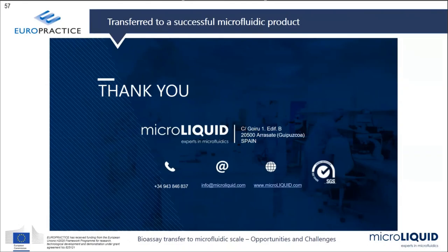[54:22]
Okay, thank you. Once more, thank you very much. It was also very nice that you showed these very practical examples of the current COVID analysis that we are all waiting for. Thank you very much, very well done.
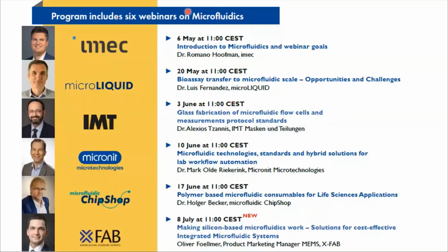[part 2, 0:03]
So, good morning, everyone. Happy to have you all on board again for this third Europractice webinar on microfluidics. After the introduction session and a first in-depth presentation related to bioassay transfer and translation to devices, we are now moving into the production capabilities. The one of today focuses on glass manufacturing and will also touch upon measurement protocol standards.
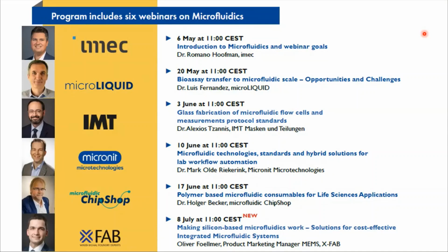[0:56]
The presentation will be given by Dr. Alexios Tzannis of IMT AG in Switzerland. Dr. Tzannis has been working for IMT for 13 years and is responsible for developing the life science and diagnostics activities of the company. He studied at the Technical University of Denmark, DTU, and obtained the degree of Master of Science in Electrical Engineering in the field of technical holography. He received his PhD at the ETH Zurich for his work at Paul Scherrer Institute in the field of resonant holographic interferometry. Alexios also holds lots of hands-on experience in micro and nanotechnology, MEMS, optics, and optoelectronics, spectroscopy, and microfluidics.
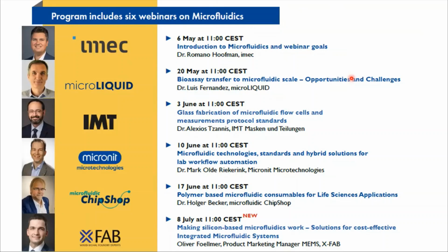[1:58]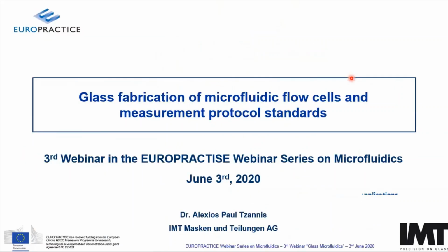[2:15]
I'm going to make a presentation on the glass fabrication of microfluidic flow cells and what endeavors are made in order to create protocol standards in order to facilitate upscaling and high volume manufacturing. So that is fundamentally my title.
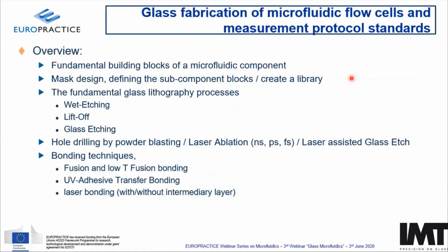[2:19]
Going to the overview of the presentation, I would like to talk something about the fundamental building blocks of a microfluidic component. What is it, what does it consist of? How can we translate that into a mask design? Fundamentally, when we are talking about glass fabrication, we are going to be talking about lithographic processes and how they can be applied in the production of microfluidic flow cells. I will take you through the fundamental glass lithography processes, naturally, which is wet etching, lift off, and etching of glass in order to generate the microfluidic channel network.
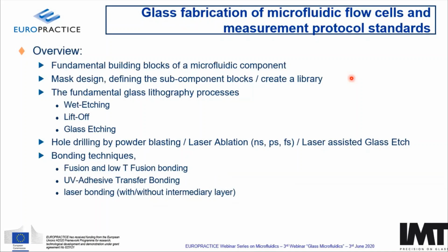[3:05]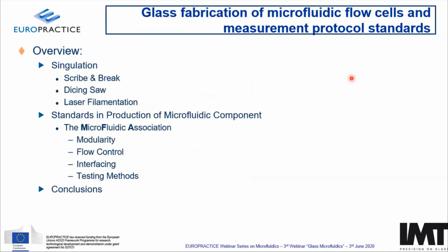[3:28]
Naturally, when we have microfluidic components, we will have to drill some holes on the glass in order to get access to the channel network. And of course, since we are doing wafer level processing, we have to bond the wafers together. So we are going to go through the different bonding techniques. And of course, what kind of singulation methodologies are available and what are best applicable. And finally, I'm going to take you through the standards of the Microfluidic Association that has been founded towards standard in production of microfluidic components. And I'll try to draw some conclusions out of that.
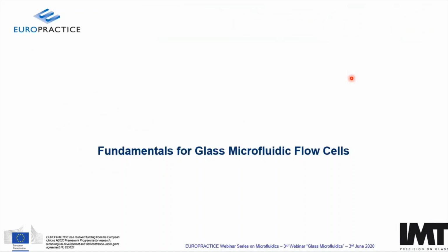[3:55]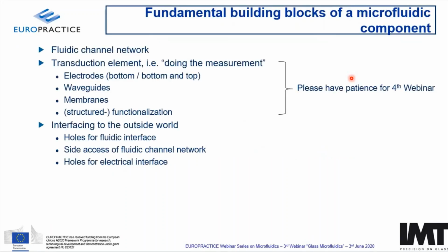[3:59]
So when we're talking about the fundamentals of microfluidic flow cells, there are three fundamental things: creating a channel network where your fluids are going to work through. You need a transduction element, meaning what is doing the measurement? That could be, for example, integrating electrodes within the microfluidic network, putting waveguides, actuative membranes, or even functionalization in terms of immobilization chemistry to capture your analyte. And finally, of course, you need the interfacing to the outside world, providing optical access, holes for fluidic interfacing, or side access for the fluidic channel networks, or holes in order to do the electrical interface with the integrated electrodes.
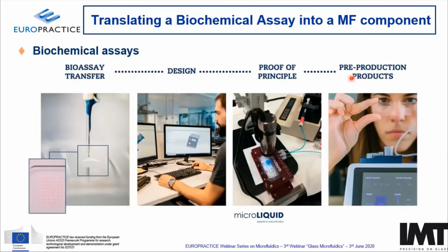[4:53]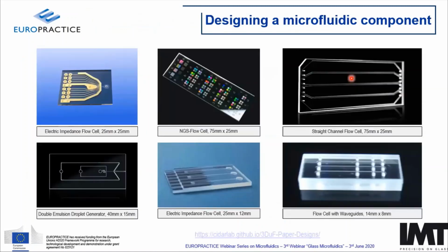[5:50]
Fundamentally, when we are talking about a microfluidic component, generally you have a biochemical assay that you would like to translate into a microfluidic component, meaning doing processing of purifying your analyte from a sample, doing some intermediary steps in order to facilitate its measurement. So what you're trying to do then is to describe the bioassay, define the individual blocks, try to design a microfluidic component that will reflect these individual blocks, and then of course do some prototyping and pre-production samples in order to demonstrate the functionality of that component. That basically facilitates the biochemical assay.
Now, if we look at glass, I have put here some of our products that we are producing, going from impedance flow cells to NGS flow cells, to simple microfluidic straight flow cells, small flow cells with integrated waveguides or with electrical impedance flow cells, or even multiple level glass components to create double emulsion droplets. And all of those require a channel network that needs to be described.
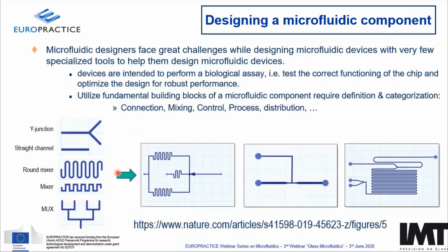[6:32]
And there start the difficulties, because there is no standard software, if we can call it that, that can do the job. So I took the liberty to show you some of the work that has been done at Boston University, where people are describing microfluidic components in terms of submicrometer components, like here on the left: a straight channel, a Y junction, a mixer, a rectangular mixer, or a multiplexer. You can combine those in order to create microfluidic channels.
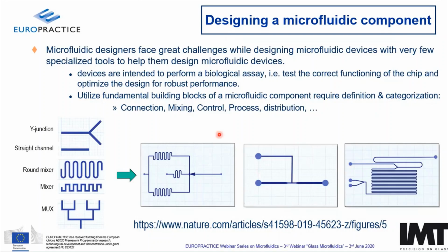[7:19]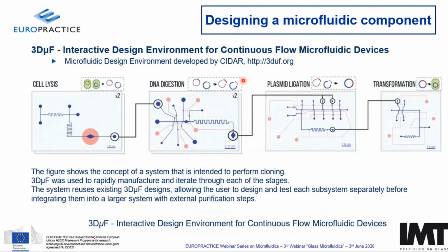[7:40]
Nonetheless, this is one part of the job: describing a microfluidic channel by building blocks. At the same time, you would like to make sure that this thing is functioning correctly. We are going to look into that a little bit later. Ideally, another step that you could do would be perhaps to take already working microfluidic solutions, line them up and create a completely new assay.
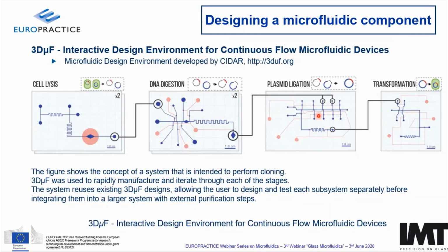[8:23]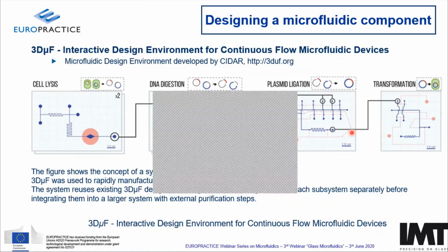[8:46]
Here you see one example that comes from CIDAR, once again for the EU, where they have a 3D microfluidic platform to design microfluidic components. Basically, what they're demonstrating here is four different microfluidic components, one for doing lysis, one for DNA digestion, plasmid ligation and transformation, and fundamentally placing those in a row, you could perform cloning. Provided you can do that on individual components, then you can go ahead and do a new redesign, where you form those into
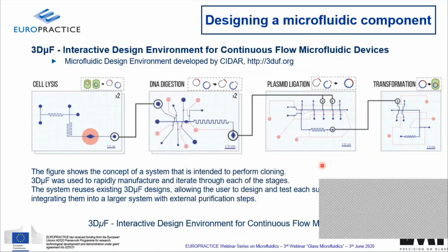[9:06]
a new component. I apologize, I have to log into my security software, otherwise I'm going to be locked out. Just a second, please.
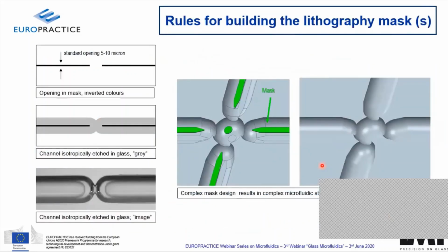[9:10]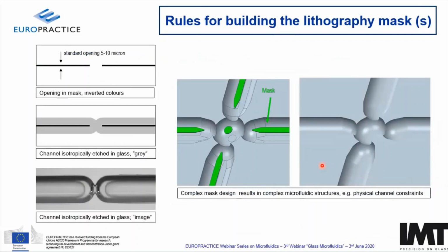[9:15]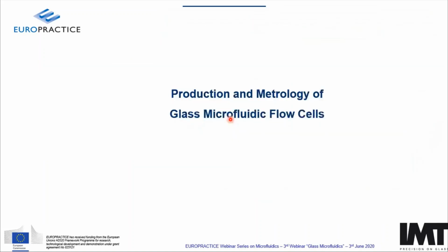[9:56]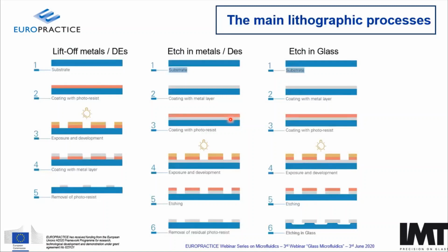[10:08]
So when we are talking about lithography and lithography masks, when we are designing masks to create the channel network, then you need to use the same rules, creating straight lines, closed polygons, and so on, as in classical CAD designs. Nonetheless, you have to consider the isotropicity of etching in glass. So fundamentally, a straight line like that will create isotropically etched channels. And by intelligent design, you can create quite interesting solutions, like here, where we have physical constraints of the channel network. So I'll try to take you through one very simple microfluidic component in order to understand what processes are involved and what kind of metrology is also involved.
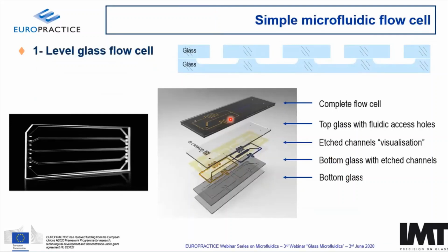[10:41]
So when we're looking at classical lithographical processes, I think people coming from the MEMS and IC industry know them more than well. Classical liftoff of metals and dielectric coatings, etching of metals and dielectric coatings, and what we have that is maybe a little bit new is etching in glass and the particularities that it has, which I'll try to explain to you in more detail further down the line.
I have here a very simple one-level glass flow cell that basically consists, as you can see illustrated in a photograph and a cross cut on the side, of one glass wafer with etched channels and a second glass wafer with drilled holes, and you put them together in order to create a microfluidic component. Here we have a blow up of this with the individual steps. Basically, the glass has been etched. This is the channel network you're trying to generate, and the top wafer with the access holes, perhaps some kind of
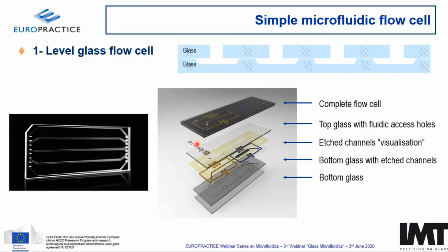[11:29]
Vishnu, can you please turn off your microphone, and the complete flow cell at the end of the day.
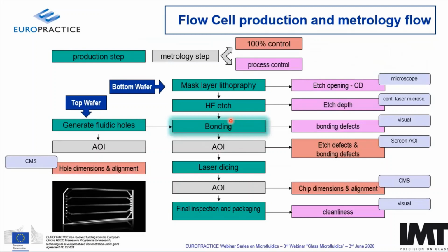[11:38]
So if we look at the flow through the different production steps, the necessary metrology steps are indicated in gray, and then what kind of control do we do? Are we doing merely process control, or are we doing 100% inspection of the components? So again, we have a top wafer to generate fluidic holes. That's a simple thing. We just do whatever process we choose and do an automatic optical inspection for the dimensions and the alignment by means of a CMS tool that is basically just a tool doing geometrical optical measurements. For the bottom wafer, we have several lithographical processes.
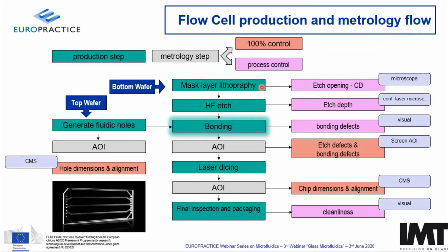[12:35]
First, we are defining the mask layer. So we are creating openings in the mask in order to get access to the glass. Here we will measure the critical dimensions by means of a classical optical microscope. We will perform the etching and measure the depth by means of laser confocal. Then we are going to marry the two wafers, and of course we would like to marry them in a way that we have well-defined and confined channels.
So the bonding, we want to measure if there are any defects, classical visual inspection, and of course using automation when we are talking about high volume manufacturing in order to identify defects in terms of etching or bonding. Here there are automatic optical inspection tools that come from the semi industry that do an excellent job on that.
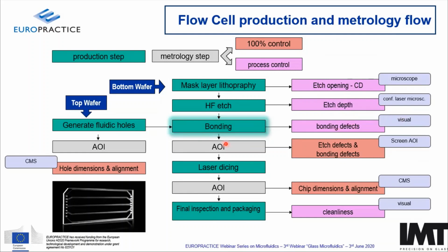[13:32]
Then after we have done some kind of singulation of the component, we would like to measure its dimensions. Did we cut it right? So dimensions, alignment, chipping, and other specifications that are necessary. And then finally inspection and packaging, and hoping that the component is clean according to the customer needs. Classical visual inspection.
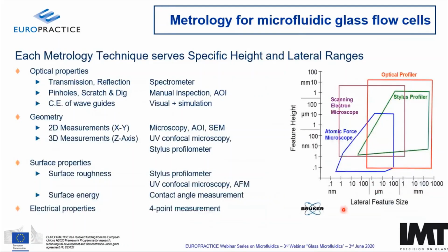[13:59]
If you're looking in the industry, there is an abundance of metrology equipment that serve specific height and lateral ranges. Usually in a classical lithography fab, you're going to have all of those, like optical profilers, scanning electron microscopes, AFMs, tactile measurement equipment, and of course an abundance of
optical microscopes. And of course, when we're talking about optical properties, transmission and reflection of the material, for example, glass is often used when you're doing low fluorescence detection. So you would like to know how is the transmission in the specific wavelength area. And if you're trying to look through, for example, to do a cell identification or another analyte, you would like to have a minimized scratch and dig on the surface where you're looking through. So in order to do that, you have manual inspection and or automatic optical equipment to perform that.
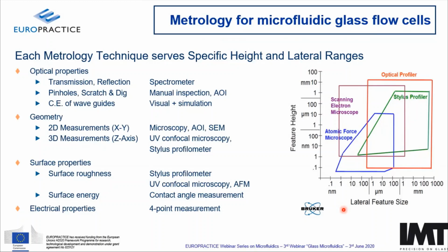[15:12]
Then you would like to measure the coupling efficiency of waveguides. This is basically done with visual inspections and simulations. I'm not going to dwell into that because this is a very particular thing.
And when we're talking about geometry, there are 2D and 3D measurements in terms of SEMs, UV confocal microscopy, stylus profilometers. Surface properties like roughness are imperative for microfluidic components, because you would like to have the surface energy to dominate the process rather than a rough surface. So you need to specify that.
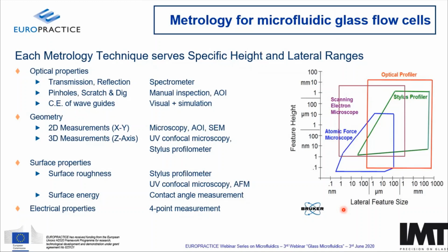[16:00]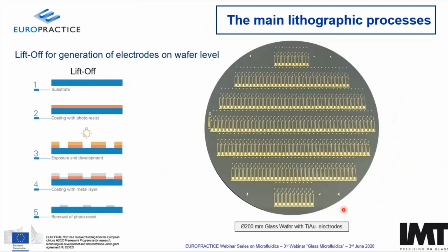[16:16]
And surface energy by classical contact angle measurements that are quite standardized. Electrical properties by classical four-point measurements. These are all processes that you will find in a classical glass MEMS foundry.
And let's take one example here just to make the case of an argument using liftoff methodologies. Well, you're creating basically a photoresist pattern. You are sputtering or evaporating a metallic layer. In this case here, you see we have golden electrodes on a wafer. Naturally, you can do platinum or other metals that suit the specific application. But usually gold is a well accepted, though expensive material. Platinum is also a well accepted, though expensive material.
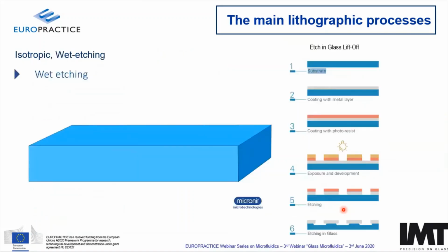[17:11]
Titanium is also a beautiful material to create electrodes that are also biocompatible. We can always talk about that a little bit later. So a very standard process. Fundamentally, what you would like to measure on that would be the critical dimension of the generated electrodes. We are going to come to that afterwards.
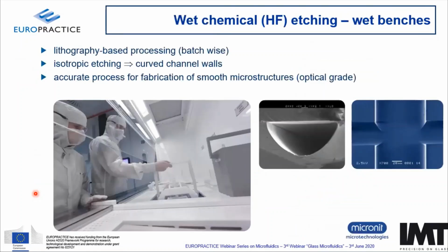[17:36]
Now we come to the fundamental process of creating channel networks. Once again, we make a metal layer, we create a photoresist on top of it, open the metal layer and etch the glass. And hopefully my presentation is going to work. No, it will not work today. So my apologies, no little video running.
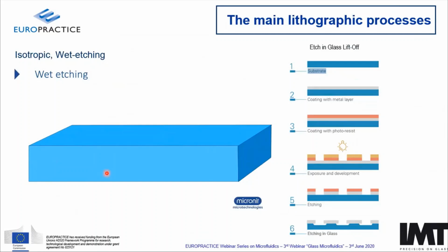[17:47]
But nonetheless, what is important to understand in etching glass are many parameters that have to be considered. But what you have to understand in terms of the channel morphology is that due to the isotropic etching of glass, you have a specific depth. The width will be the opening of your mask plus twice the depth. So you have always an aspect ratio of at least 1:2.
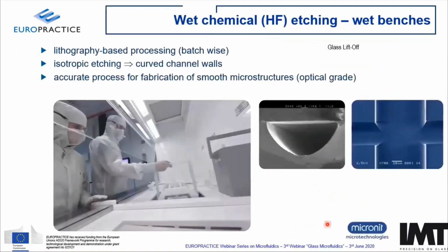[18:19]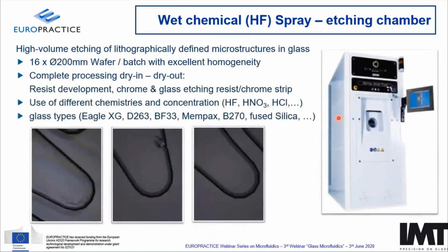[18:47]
Naturally, wet chemical etching requires a very good understanding of the processes. There are two classical ways of doing it, using bath. So you're doing isotropic etching in classical bath formats, as you can see here. Here you see the classical bathtub-like profile of such channels. Alternatively, you can use spray etching chambers where you can utilize also a higher level of automation.
In this case, this machine does a complete dry out process. You would do the whole cycle of the processing of etching in glass in this machine. So you'll do the resist development, etch the chrome, create access to the glass, etch the glass, and then strip the resist, strip the chrome, and get a pure glass out of it with an excellent homogeneity over 16 wafers.
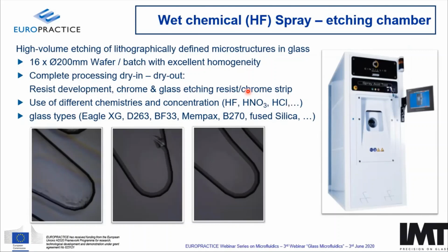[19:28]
And that requires, of course, a good understanding of the masking that you're going to use, because fundamentally, you don't want to have pinholes, you don't want to have all kinds of disturbing effects, like these ones, for example, here, that you see a classical error of the glass that has been transferred into the microfluidic channel. You would like to make sure that no adducts are being redeposited on the glass and create a rough surface. And you would like to fundamentally transfer the excellent surface roughness of high quality glasses like Eagle, D263, Mempax, and so on, directly into the channel, maintaining a surface roughness of a few nanometers.
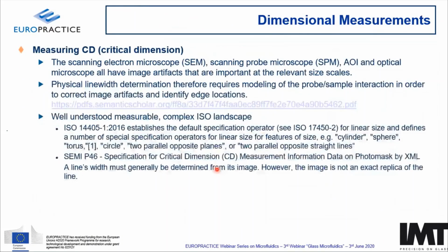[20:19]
Fundamentally, in both of these methodologies, you would like to measure the critical dimension of the structures, be those the gold electrodes or the channel width. And once again, you have the possibility of using SEM, scanning probe microscope, automatic optical inspection, or classical optical microscope. They all have an imaging artifact that needs calibration.
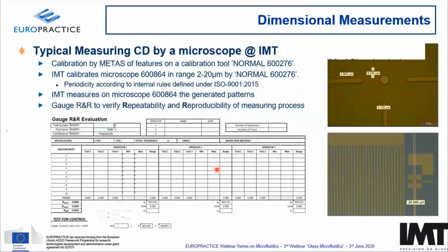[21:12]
So there is quite a well understood measurable. Everybody uses it every day in the lab. There's a rather complex ISO landscape. I have left some information here. I'm not going to dwell on the ISO. I'm just going to show how we classically do it in our fab.
So when we are talking about doing a measurement of the critical dimension by, say, a classical microscope at IMT, we do the following procedure. We have a calibration tool. We calibrate the microscope with the periodicity that we have internally decided upon utilizing the ISO 9000. And then we use the calibrated microscope to measure the generated patterns.
Of course, what the customer would like to see is that we're measuring the correct thing. So apart from the calibration, we use a gauge R&R to verify repeatability and reproducibility of the measuring process. This is usually a part of the documentation for the specific product we deliver to our customers.
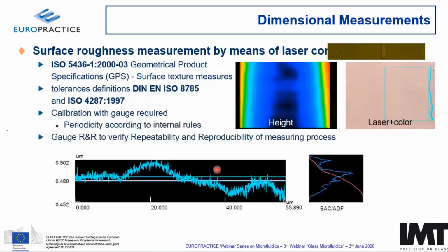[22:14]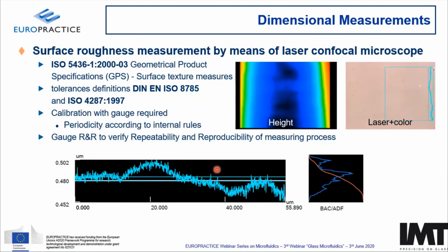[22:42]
The same thing here for the surface roughness or the surface depth of the channels. We are using a confocal microscope, a laser confocal microscope. There are definitions about how you can use that to measure surface texture or other parameters. You are more than free to go and look at those. Fundamentally, what you get is a roughness profile, as I indicated here. And once again, your laser confocal microscope needs a gauge to calibrate it with a periodicity that you have to decide upon. You need education of your people doing the measurements and documentation by gauge R&R.
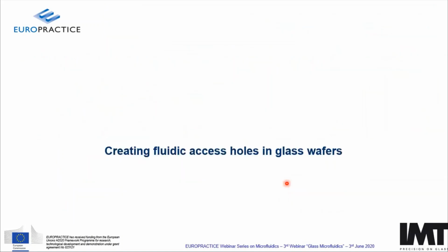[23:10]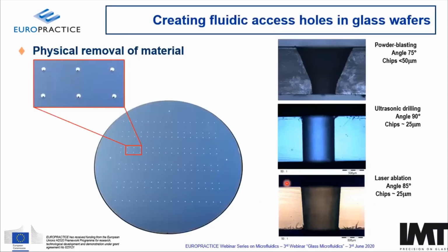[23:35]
So we have demonstrated now that we can etch channels in the bottom wafer, and we can measure that we have got the right profile of these channels. So now we're going to address the generation of the top wafer that I have started with and try to show how we can make fluidic access holes in glass wafers. So there is an abundance of processes to do that. Here you can see three classical ones, that is powder blasting, ultrasonic drilling, or laser ablation.
They all have their pros and cons. The big advantage of powder blasting is that you do that on more or less a wafer level. Ultrasonic drilling and laser ablation are hole by hole. And then you have to weigh the pros and cons because you would like to have a cheap and affordable process of doing holes on the wafer. There are also other constraints that have to be considered. For example, chipping, that is the little roughness around the hole in the entrance or the exit that can create bubbles or dead volumes that you would like to avoid.
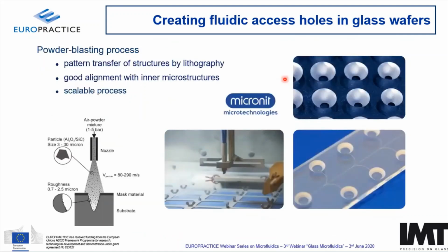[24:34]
If we look in some more detail here, how does the powder blasting process work? Fundamentally, you have a substrate, you create, with classical lithography, a mask material, that is a soft material, and have particles injected with high volume, high velocity on the wafer. When they hit the mask material, they're going to bounce back, an elastic scattering if you would like. When they hit the glass, it starts etching it away. That's why you also have this V form in it. It's a very good scalable process, and of course, due to lithography, you have a good alignment with, say, the structures, the channel network.
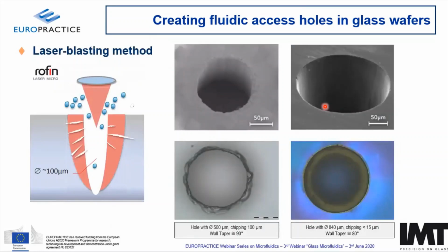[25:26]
On a wafer level, you can of course do laser blasting. Lasers have won a lot of market in this area. Why? Because you have different laser machinery. You can go from nanosecond, picosecond, to femtosecond lasers. The faster the pulses, the more accurate the hole that you drill, the more expensive your wafer becomes. So there is always a balance to be struck here.
You can clearly see here the nanosecond holes versus the picosecond holes, that you have much less chipping. This is due to the generation of micro cracks when you're creating ablation processes. At the same time, though, pico and femtosecond lasers usually have much longer processing times and consequently are also more expensive. Don't forget it is hole by hole. So if you're having 200 holes, that's going to take a long time.
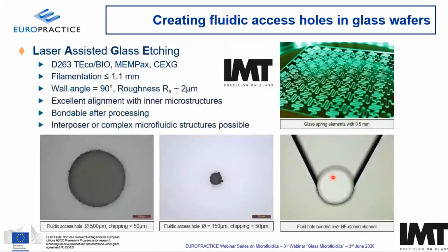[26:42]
Another alternative is doing a combination of laser filamentation and etching. So it's a process that we utilize here at IMT. Basically, you're creating micro damages where the etchant is preferentially etching through, and then you create kind of a pill that is going to drop off the hole, if you would like. It creates very nice vertical walls with an acceptable surface roughness of 2 micrometers. You can perform an excellent alignment to your etch channels, minimizing dead volumes.
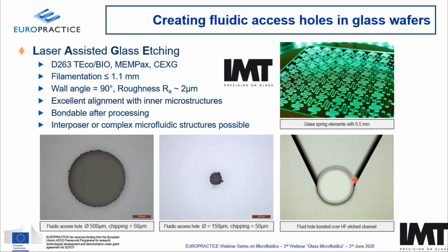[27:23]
And there are some restrictions because, of course, you cannot use this process for all materials or all glass wafers available. Nonetheless, you can also do exotic structures like these here, glass springs that look very nice, though they cannot be used. But more seriously, you can create interposer glass wafers with a minimum thickness of, let's say, down to 200 micrometers or so. So you can create interposers for complex microfluidic structures.
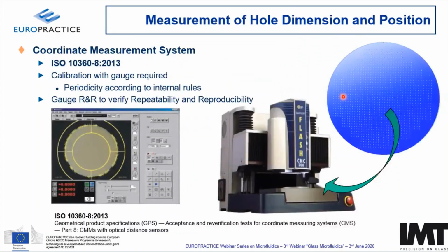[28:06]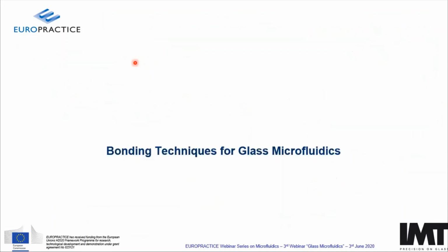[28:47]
Fundamentally, after we have made the holes, here you can see on the right side a wafer with many holes. You use a coordinate measuring system like this one from OGP, utilizing a standardized ISO process for geometrical product specifications, having a gauge to calibrate it and a gauge R&R to verify once again repeatability and reproducibility. You can generate automatic data that can be delivered together with the product to the customer.
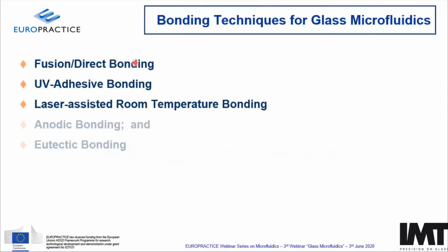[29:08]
So now we have documented that we can generate the bottom wafer with the channels and we have measured them. We have generated the top wafer and we have measured them. Now we are going to bond the two wafers together and we'll go through the bonding techniques that are available. I'm going to focus on three: fusion, UV adhesive, and laser assisted room temperature bonding. Anodic and eutectic are available, but not very often utilized.
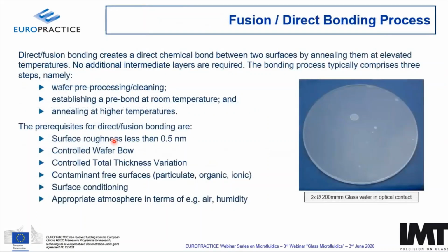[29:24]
So currently, fusion or direct bonding, as it's called, you fundamentally bring two glass surfaces in very, very tight proximity in order to get the van der Waals forces of the silicon oxide molecules to start working together. In order to do that, of course, you have to remove everything, all kinds of residues, dirt, particles, organics, and everything, in order to bring the silicon oxide molecules close together. And what you're doing is you create this pre-bond, bringing them into optical contact, and then anneal them at high temperatures, creating a chemical reaction on the surface. So you need surface roughnesses below half a nanometer in order to get the molecules into contact. You need to be able to control the wafer bow, the TTV of the wafers, and of course the contaminants.
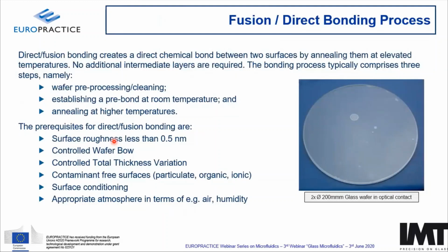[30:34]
Imagine that if you see this hole here being generated that has, let's call it, a diameter of several millimeters, it's probably generated by a small dust particle of a couple of micrometers. And of course, if you try to squeeze the surfaces too hard around a micrometer dust or glass or whatever particle, you're going to get this kind of confinement. You would like to avoid those, of course.
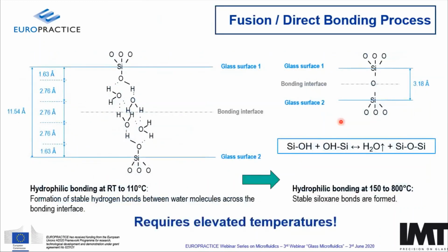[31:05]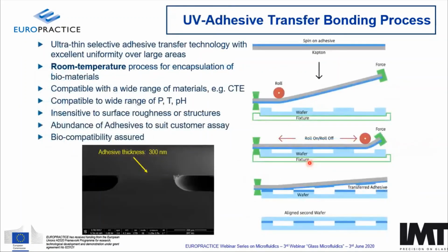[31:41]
So when we are looking more at the chemistry, what you're doing is creating a hydrophilic bonding at room temperature, where you have stable hydrogen bonds between the water molecules along the bonded surface. Then by increasing temperature, you create stable siloxane bonds and you have your physically strong bonding that you can really not break. Mind you though, it requires elevated temperatures in order to break up the silicon dioxide molecule. There's another alternative that is at room temperature.
So basically, once again, consider you have the one wafer with your etched channels, you have your top wafer where it has some holes, and you would like to bring them into contact. If you put an adhesive in the proximity where they should go into contact together, you can get basically the same effect. For that, you need specialized equipment in order to bring the adhesive just on the area where the two wafers get into contact and naturally avoid filling your channel network with the adhesive.
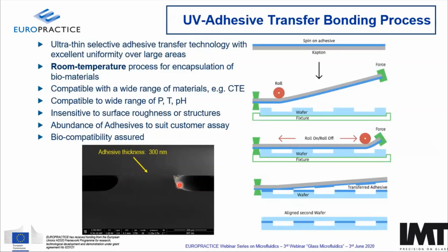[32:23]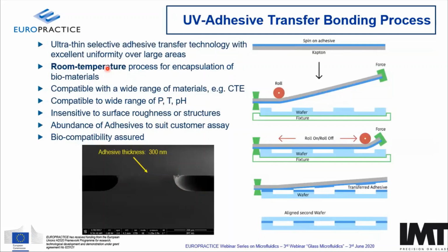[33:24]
An alternative to that is laser-assisted bonding process. It functions in a similar way as fusion bonding. You bring the two wafers into optical contact, and then you utilize a laser to create a small plasma in the interface of the two wafers, and that is going to create the bond.
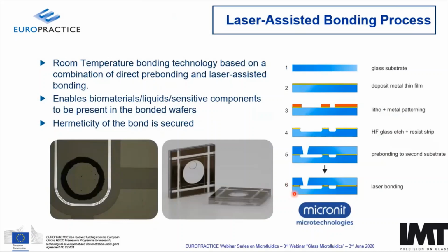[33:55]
And these are small lines along the channel wall network that you can see here as white lines. That guarantees also an encapsulation of biomaterials, liquids, and other sensitive components, excellent hermeticity, and naturally also a room temperature bond. So mind you that the room temperature bond is a key component to enable microfluidic solutions.
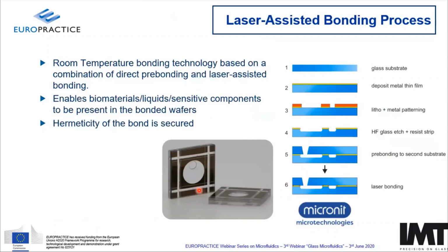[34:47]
Why? Because usually you would like to incorporate in your microfluidic solution some kind of chemistry to immobilize your analyte. That means a chemistry that will capture your protein or your DNA sample or whatever. So we have two techniques here: UV adhesive process, transfer bonding process, or laser assisted bonding process that facilitates that.
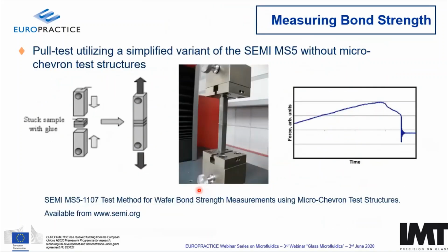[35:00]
Okay, now once we have bonded the wafers together by means of fusion bonding, adhesive bonding, or laser bonding, you can basically chop up a little part, glue it between two of those metallic constrictions, and try to pull them apart to see if the bond strength is there. So here we utilize a variation of the SEMI MS5 test method of wafer bond strength without the micro-chevron test structures, and you can get basically a ramp, and sometimes it's going to break. That indicates the bond strength, usually measured in megapascal.
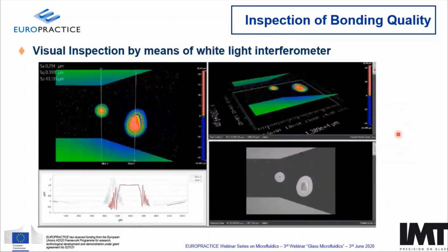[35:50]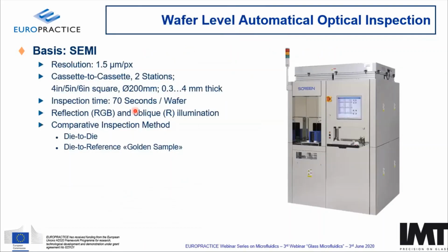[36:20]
In terms of visual inspection, you remember I showed you an image of an enclosure between the two glass surfaces. Here it is again, with a classical optical microscope or with white light interferometer. You would like to quantify those and definitely avoid them, in particular in the proximity of your channel, because there is where your analyte might get lost. But once again, this is an optical inspection. There is no documentation. It's very difficult to do that on a wafer level.
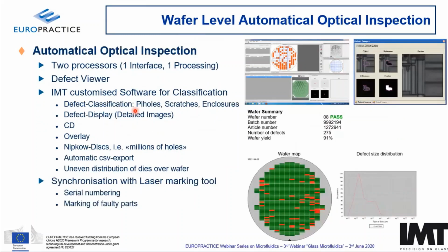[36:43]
You can utilize automatic optical inspection, such as this tool from Screen, in a classical cassette-to-cassette configuration. We have taken this tool and modified it with customized software in order to facilitate exactly identifying the enclosures, measuring pinholes, scratches, and stuff like that on the surface. Do a defect display. So you have here, for example, a wafer map with the bad microfluidic components. You're getting some statistics and you're getting also a defect size distribution.
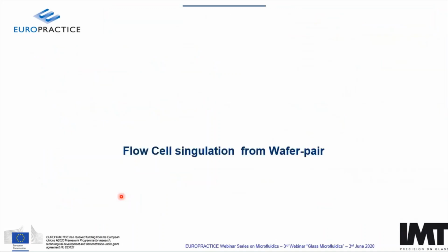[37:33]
Naturally, you can take that, synchronize it with a laser marking tool to kill off the bad components, or add a serial numbering and get really qualified data that you can provide to the customer together with your components. So what we have done now, we have created the two wafers, we have bonded them together, and we have measured the interface. We know we have created good flow cells, and now we would like to take the flow cells out of the wafer pair that we have bonded together.
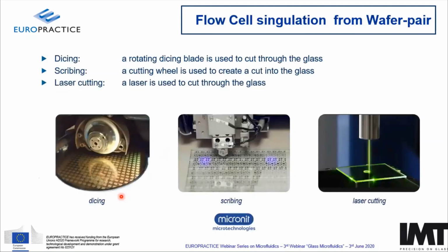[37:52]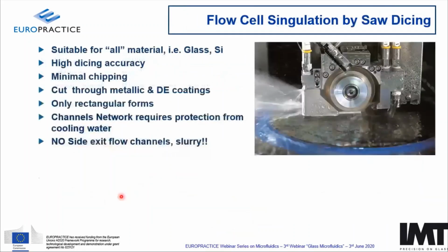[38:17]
There are many industrial solutions. One of them is dicing, using a classical dicing saw. Scribing is basically using a needle, running over the wafer and applying physical pressure to cut them apart, or laser cutting, which is a more industrialized and increasingly popular methodology. And let's look at two of those techniques: singulation by saw dicing, a very well established technique.
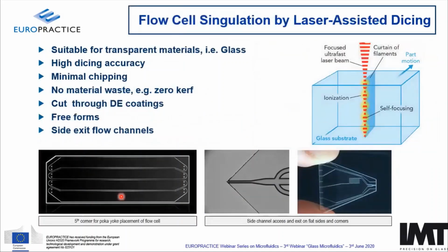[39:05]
You can use it for basically all materials, glass or silicon, or even hybrids of glass and silicon wafers together. It has a very high dicing accuracy, minimal chipping. It has one disadvantage, of course: fundamentally, you are losing real estate due to the physical dimensions, and you can only get rectangular forms out of this. And note also, if you would like to have side exits of your fluidic network, this is not going to work because all this water and slurry is going to dig itself into the channel network, and it's very difficult to clean it. An alternative to that is laser assisted dicing, where you're using perforation.
Works excellent in transparent materials, provided that the reflectivity is not more than 30%. You're going to get this chain of ultra-fast small holes generated into the glass by the self-focusing of the picosecond laser.
By creating a part motion, you're going to make kind of a curtain. If you apply some small physical or thermal force, you're going to cut the components apart. The big advantage is that you have really minimal chipping. You have zero kerf. You can cut through dielectric coatings, though not metallic coatings, and you can basically make free forms like you can see here with several side exits.
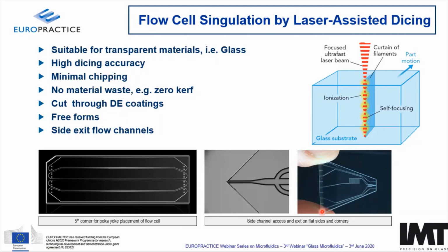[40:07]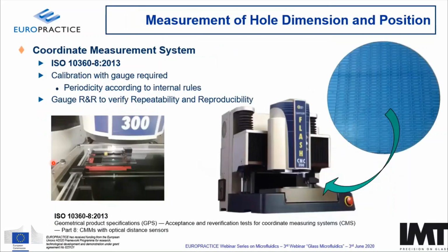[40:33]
Here, 1, 2, 3, 4, 5 channels going in, 3 going out. You can actually create, like this one here, a channel going out from a corner of a microfluidic component. And you can make the nice good old poka-yoke safe fifth corner for free without any sacrificial space. Very good technique, works excellently.
Now we have cut the wafer with the laser or with the dicing tool. And we can use once again a coordinate measuring system to measure chipping, to measure dimensions, to measure hole to channel network positioning, and so on and so on. Once again, by calibration and gauge R&R.
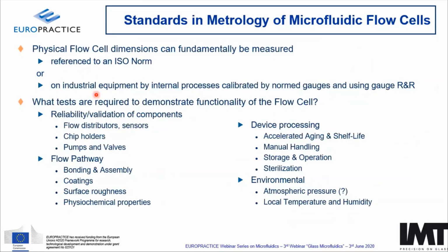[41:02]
As you can see now, we have demonstrated that we can fundamentally do all the physical dimensions. We can refer them to an ISO norm or utilize industrial equipment, utilizing internal processes and calibrated norm gauges to do these measurements. We have demonstrated that we have built it according to our wishes. We still do not know if this microfluidic component is going to work.
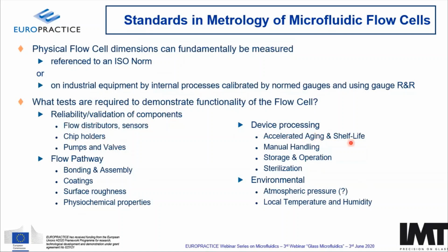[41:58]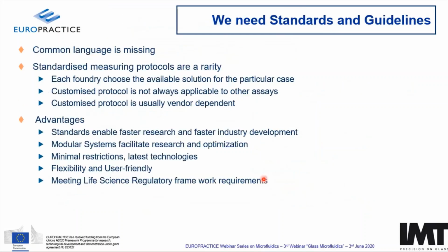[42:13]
So we need to do reliability and validation of the components, like for example, the flow distributors, the chip holders, the pumps and valves. We need to do a demonstration of the coatings or the physicochemical properties that we have not looked into currently. Accelerated aging and shelf life, storage and operation, sterilization: is it necessary? And what are the environmental influences on the operation of the flow cell? A lot of those are not really documented and really do not exist in any means.
Additionally, we have realized in the industry that there is a common language missing, and this is something that we are working to generate. We also need standards and guidelines for measuring protocols, because as I demonstrated, some of the protocols are generically generated from IMT. That does not mean that a second foundry you talk to utilizes the same methodologies, the same metrology. Consequently, possibly the results are different. Also, a customized protocol that has been developed for one specific assay won't necessarily work for the next assay.
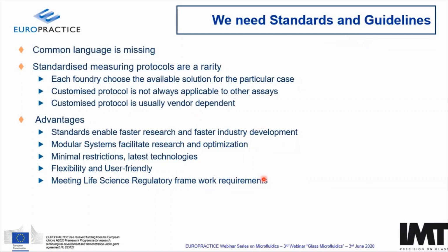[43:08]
And the advantage of generating a standard and guidelines platform would be to enable faster research and faster industry development. And of course, utilizing the latest technologies and latest measurement technologies that can be documented, we can create a flexible and user-friendly environment for people to generate new solutions. Fundamentally though, the biggest requirement and constraint is to meet life science regulatory framework requirements.
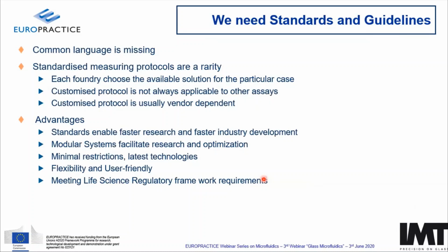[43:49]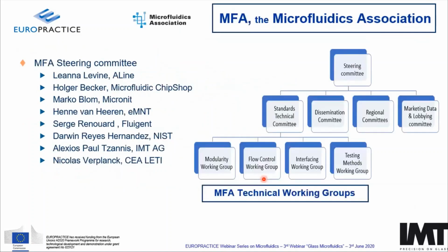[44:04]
Here, NIST and FDA start putting more and more pressure to create this kind of legalistic, if you would like, framework that needs to be fulfilled and needs to be documented. In order to facilitate that, the Microfluidic Association has been developed with the aim to facilitate the generation of guidelines and standards. We have defined four groups: the modularity, flow control, interfacing, and testing methods.
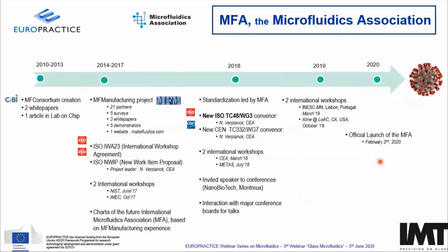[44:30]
And the pathway to today has started already in 2010, where within the Microfluidic Consortium, we were discussing the lack of standards. We have been working for some time in that area, and we finally had our official launch of the Microfluidic Association on February 2nd, 2020. A very nice day, 02/02/2020, and then came COVID, and we are still working on the next steps, probably in a virtual arena as we are doing today.
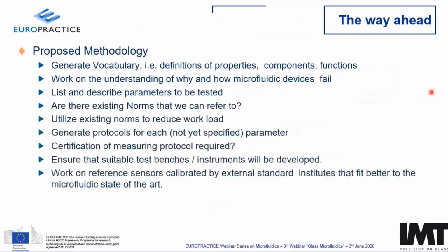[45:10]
What are we trying to do, and what is the way ahead that we are trying to establish? It is to create a vocabulary, meaning create definitions of properties, components, and functions. Define this so that everybody understands what we mean. Try to find out the means of device failure. Create a list of parameters that need to be tested. Cross-reference with existing norms and see, well, can we do it? Can we lend a norm that's already existing out there? If not, then we should generate a protocol for the unspecified parameter, and preferentially create a measuring protocol that can be described, along with the test benches and instruments that are required to do the job. And of course, talk with different external standard institutes to find the best way of doing that.
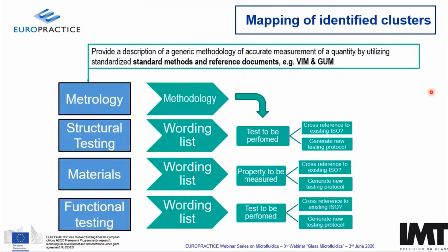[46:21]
So generating that, we believe that there are in the generic industry standard methods and reference documents that we can utilize in order to create this methodology, doing the wording list, which tests need to be performed to cross-reference and/or generate a new testing protocol for all these four different, let's call it, blocks of open to-be-defined parameters.
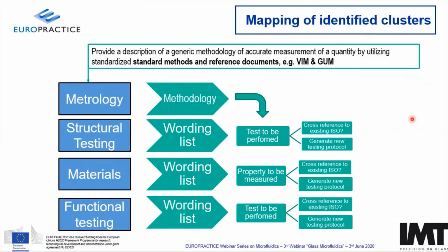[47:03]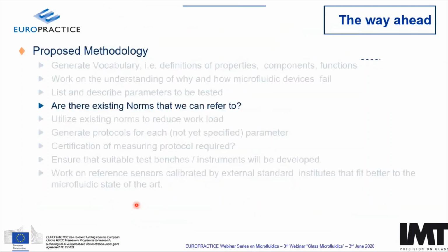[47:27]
Okay. So when we're talking about vocabulary, every norm starts with a vocabulary describing what they're going to talk about. The same thing we have been preparing here. You can find an uploadable version of our microfluidics vocabulary under this URL. And the next question that comes is, are there norms that we can refer to for parameters that we would like to specify? Luckily, there are.
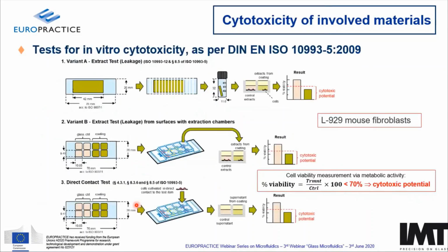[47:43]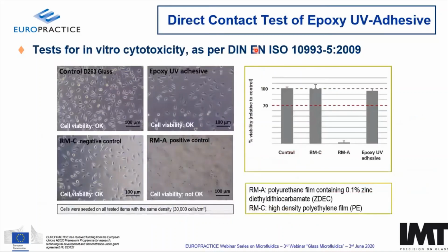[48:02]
I'll bring you a couple of examples here. One of them is cytotoxicity. I have a lot of materials. I want to demonstrate that they are biocompatible, cytotoxic safe. There is a very nice established protocol that you can use. And you can do that. For example, here is a demonstrator for our UV adhesive that we utilize in our solutions, where you basically demonstrate that it is cytotoxic safe.
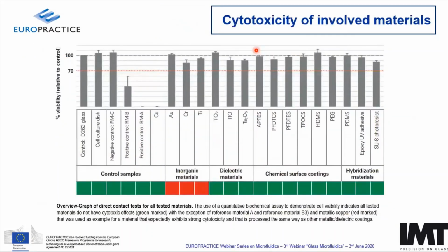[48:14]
We have performed that with all the involved materials of the applied flow cells that we are doing, from bulk materials like the glass, the inorganic materials like gold, chrome, titanium, dielectric coatings, surface coatings, and for example, the epoxy or SU8 photoresist. Demonstrating that, then you don't have to go and say, okay, will this work for my analyte, because all the involved components have been documented, so that speeds up development time.
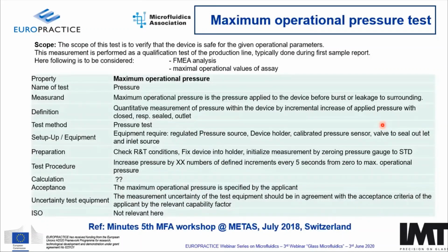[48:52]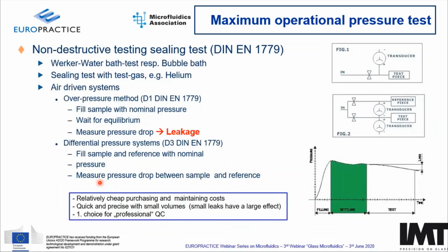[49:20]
Let's take one example here for the maximal operational pressure that I extracted from the fifth MFA workshop in July nearly 2 years ago, where we said, okay, we need to define the maximum operational pressure. What is the measurement? What is the definition? And try to find out what is the right way to describe it. Luckily, there are initial possibilities of doing that.
There is the DIN for sealing tests in different methodologies, for example, by using a test gas like helium and see if you leak, or pressurize your microfluidic component, wait for equilibrium. If the pressure drops, then you have a leakage. It doesn't necessarily give you the maximum operational pressure, because this is something that has to be agreed upon for the specific microfluidic component.
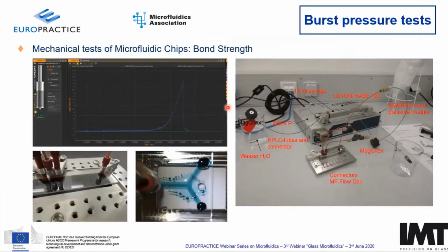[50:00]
But here we can see one other example. You can see the bond strength, or the burst pressure test, if you would like. You basically increase pressure until it breaks. And here is the whole setup. Here you see one component where the fusion bonding between two wafers was bad, and you can see that the material leaked from it. Is this the right way to create a documentation about the maximum operational pressure? This is not yet defined to date.
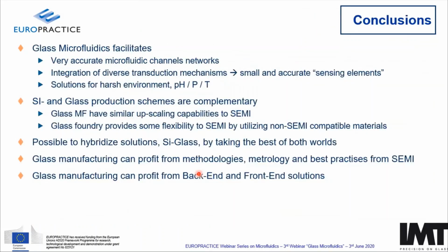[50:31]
So, going to conclusions, glass microfluidics is a well-established technology. It facilitates very accurate microfluidic channel networks. Some of the best running microfluidic solutions in the market are based on lithographical processes on glass wafers. For example, NGS today without lithography on glass would not exist fundamentally.
You can integrate different transduction mechanisms in order to facilitate small and accurate sensing elements, if you would like to call it like that. You can create solutions that are very robust for harsh environments, like, for example, high pHs, pressures, and temperatures. And for people that come in from the silicon industry, I believe that I demonstrated that glass and silicon have production schemes that are complementary. We, from the glass microfluidic industry, can profit from the upscaling capabilities from the semi industry.
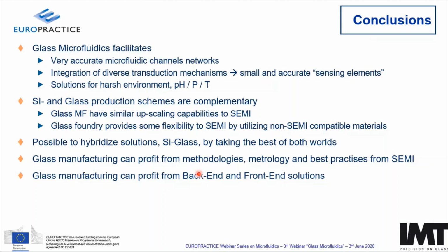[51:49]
On the other side, we have some flexibility, because we can utilize non-semi compatible materials, like, for example, gold, or functionalization in terms of different binding chemistry, like amine or azide chemistry. It is possible to hybridize, use silicon glass solutions by taking the best of both worlds. And of course, we can profit from the methodologies, metrologies, and best practices from the semi world. And naturally also from the back end, and in particular the front end solutions that are already established in the industry.
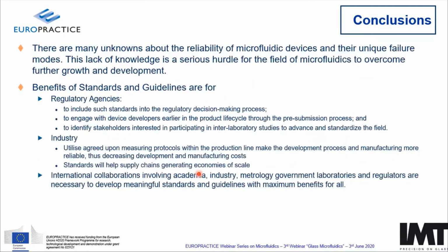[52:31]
In terms of standards and guidelines, there are a lot of unknowns about the reliability of microfluidic solutions and their operation modes. And this tends to be a hurdle for the field of microfluidics and needs a lot of work in order to create these standards and guidelines. We know that there is a big pressure from the regulatory agencies. They would like to have more standards in order to facilitate their decision-making processes.
And they would like to engage device developers earlier in the product life cycle in order to eliminate all these dead-end tests. And for the industry, it's very important to have measuring protocols, because it makes us comparable for the customer, and it makes it also transparent how we produce things, how we measure things, and that makes development of the individual product faster. And of course, that faster creates supply chains with a good economy of scale.
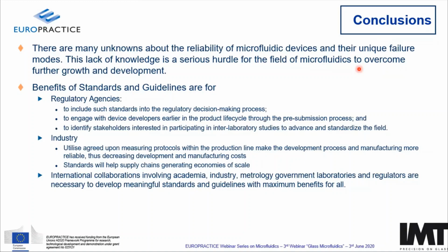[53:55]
And naturally, we need a collaboration between academia, industry, and metrology, and people that are willing to share the know-how in order to create these meaningful standards and guidelines with a maximum profit for us all. With that, I thank you very much for your attention, and I'm open for questions.
Thank you, Alexios, for your instructive presentation. We are indeed now ready for questions, but I will start with one which I also asked to the previous presenters. And that is, what do you see as the main bottleneck for further development of microfluidic devices in the future?
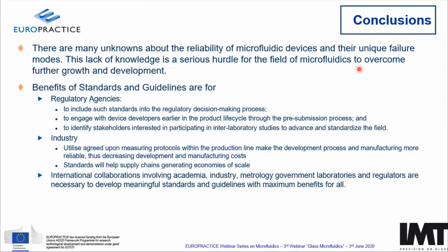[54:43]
In the future? Yes. I think one of the big hurdles for the industry is indeed, one, the standardization. We lose a lot of time, I would not call it reinventing the wheel, but it is taking a component every time from scratch to document that the components that are involved, the materials that are involved, are according to the needs of the regulatory agencies. This is one of the big hurdles.
Second, of course, is the integration of the assay. And this is one of the big hurdles, I would say. How do you make sure that your analyte is going to stick on the particular area where you would like to measure it? That means creating the environment to measure your analyte with a high reproducibility.
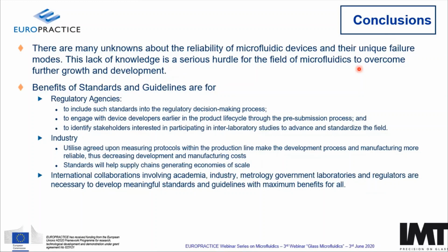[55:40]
Thank you. And you already gave a warm invitation to everyone to pay more attention to standardization. So hopefully we get more responses. They are more than welcome, volunteers to participate. Yes, yes. Please. Yes.
There is another question which probably will come back in the coming sessions as well, since it relates to the difference between glass and polymers. So how does glass compare to polymer-based microfluidics in terms of cost versus performance? Yes, it's a very good question, and I think this is one of the fundamental questions that everybody that wants to start building a microfluidic component should answer from the beginning.
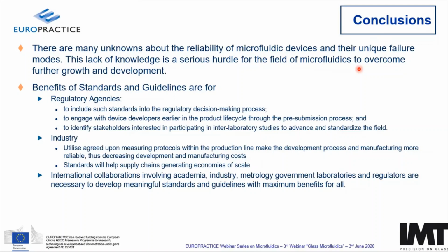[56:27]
And what I want to say with that is, is it a pure point of care component that does one measurement? Then you need to create millions of those, and then you have to find a solution that is based on a plastic injection molded solution. Sorry, even though I'm making glass, that would be the straight way to go, because at the end of the day, the question is, how much are you going to get from your insurance company as a reimbursement for the test? And if you say, listen, I'm only measuring one analyte in one specific situation, you're going to get 20 euros. That means that your consumable can only cost a tenth of that, that's 2 euros. So this kind of cost analysis has to be done.
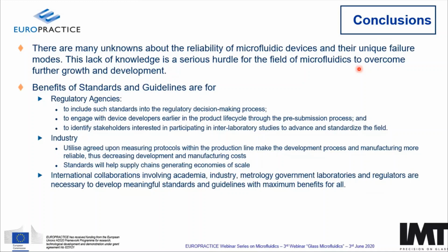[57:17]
Now, if you're talking about comparing glass with plastics, the complexity is so broad that it's difficult to do that. But if you say up to 100,000 components, the two technologies at the end of the day are going to line up. If this is already at 50 or at 200,000 components, it's a little bit difficult to say. What is more interesting, though, is not to say, should I go with plastic or glass? The question is, what kind of intelligent hybrid solutions can I generate that take the best of both technologies? And we should not be so religious about which is the best material to work with.
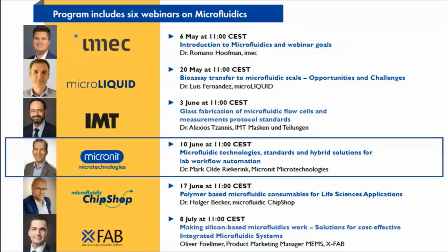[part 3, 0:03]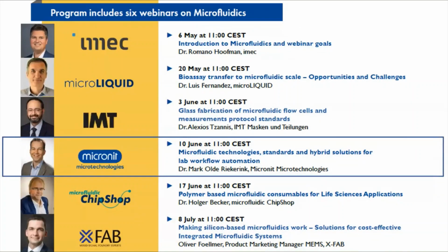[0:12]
Today, we continue with more knowledge sharing on the available manufacturing solutions for microfluidic devices. After the first part in which fabrication methods were introduced, we resume today with more microfluidic technologies, standards, and also hybrid solutions for lab workflow automation. This work will be presented by Mark Olde Riekerink of Micronit Microtechnologies.
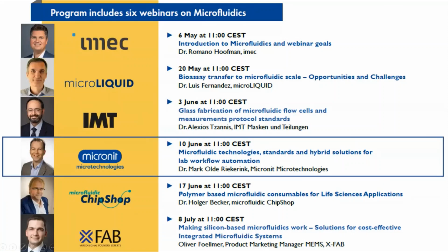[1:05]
My name is Mark Olde Riekerink. I'm a Senior Business Development Manager at Micronit Microtechnologies, and I'm happy to present to you today about microfluidic technology standards, hybrid solutions for lab workflow automation.
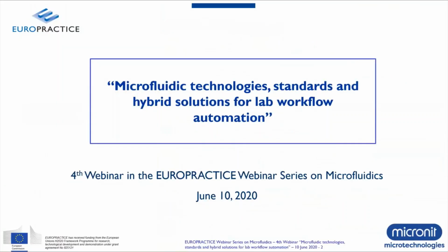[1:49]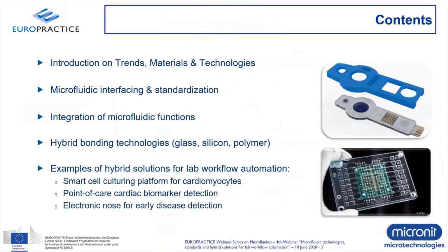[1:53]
Let me start with the contents of this webinar for today. I have split the presentation in a few topics. First, I would like to start with an introduction about trends, materials, and technologies in the microfluidics field. Then I will continue to talk a bit more about interfacing and standardization. Following that, integration of microfluidic functions, which is very relevant if you want to create devices with an automated workflow.
Then I'll continue with discussing a bit more in detail the technical aspects of various bonding technologies that we use to bond different materials together, which we call hybrid bonding technologies. And finally, following up on those bonding technologies, I'd like to share with you some examples of hybrid solutions for lab workflow automation, which brings me then to the end of the webinar and allows you to raise some questions.
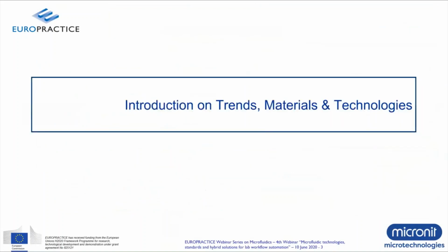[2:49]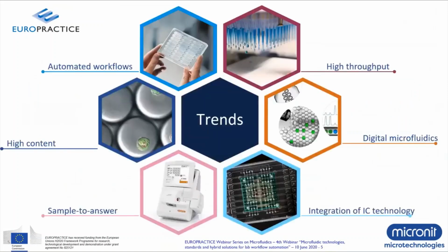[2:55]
So let me start with the introduction on what we see happening in the microfluidics market today. A number of trends we see happening in the market. I will go through them, not every one in each detail, but the general trends we see are that making microfluidic devices, making products for life science and diagnostic applications means that we have to work towards an automated lab workflow, as we call it. You do not want to have too much manual handling. You do not want to use too much reagent volumes. You would really like to automate and reduce the cost of the test and speed up the time you need for doing a test. And some of the other trends mentioned in this slide are coupled to that.
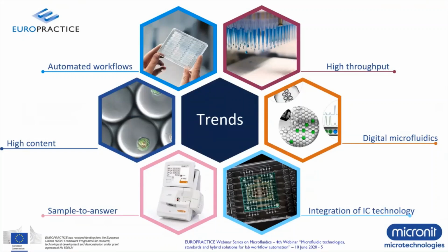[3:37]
For example, sample to answer, which is a trend in the in vitro diagnostics and point of care field. Having a sample, for example, saliva or blood or urine, and measuring that in a cartridge within a few minutes to get your result. In the high-end life science, we also see a trend towards high content and high throughput. More data are being generated, for example, in DNA sequencing by using state-of-the-art technologies in that field. And this has tremendously accelerated that field of research and also moving towards medical diagnostics. And also we see that to make that happen, we not only need microfluidic components, we need to integrate IC technology. And this is, I think, a nice link to this webinar for today, really where semicon meets microfluidics.
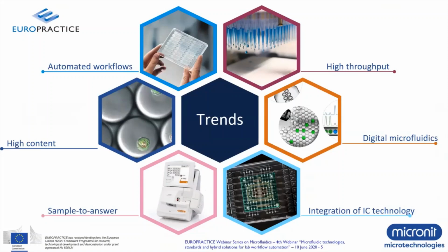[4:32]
Finally, we see, and I think with the actual situation around COVID-19, that's good to mention, the need for high throughput. There are tests on the market, but preferably you would like to be able to do a large range of tests in a very short time. So you need to generate mechanisms for that in order to create a high throughput.
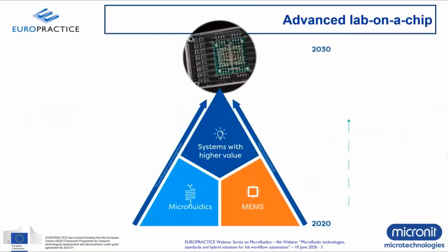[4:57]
Let me continue with showing what happens if these trends would be reflected in terms of how to deal with that in technology. Basically, you could see this triangle, as we call it: if you bring the microfluidics expertise together with the MEMS and semicon expertise, you can create more functionalities and also work towards diversification and integration. And if you do that and you combine these technologies together, you can create systems with a higher value that will result in an advanced lab on a chip system. And that's really, I think, the key message for today's webinar. We're not just discussing microfluidic solutions. We'd like to discuss solutions that create a higher value to the market, to the life science and diagnostics market.
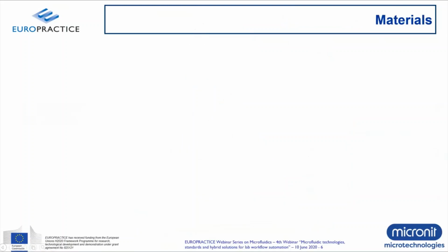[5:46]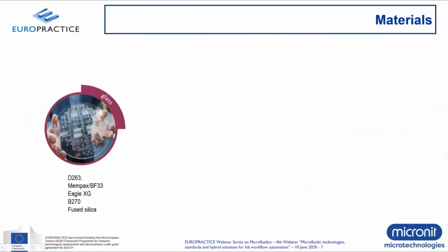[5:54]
To continue with the materials, I would like to say that basically there are a number of groups of materials. I already mentioned them briefly. Let's start with glass. Glass is a commonly used material in microfluidics-based solutions, especially if you look at the more high-end life science applications. Typically, the types of glass that are used are borosilicate glass like D263, Mempax, or Eagle XG glass, but also more high-end pure glasses like fused silica are commonly used in this industry because of their superior optical properties and low autofluorescence.
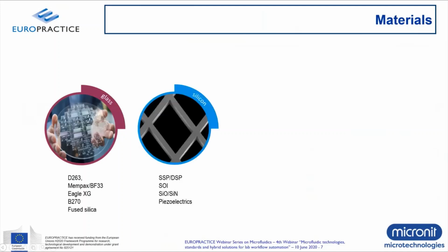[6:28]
If we then look at silicon, we're not just talking about plain silicon wafers, single side and double side polish, but also about the more advanced silicon wafer systems like silicon on insulator, wafers with silicon oxide and silicon nitride layers for masking. But we also clearly see a trend towards things like piezoelectrics, where piezoelectric layers are integrated into a silicon device to create more MEMS functionality, which can then be integrated into the microfluidic system as well.
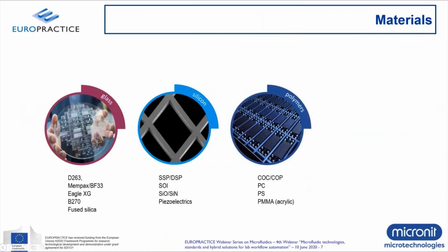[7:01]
And then a third group, the polymers, I would also briefly like to touch upon. We see various polymers entering the microfluidics market. I think the four mentioned here are the main groups of polymers that are used currently for applications in life science and diagnostics, which are, from the high end to the low end, COC and COP, cyclic olefin polymers, polycarbonate, which is a polymer well known from the media industry. CDs and DVDs are made out of that material. Then we have polystyrene, which is commonly used for cell culturing applications. And if you talk about prototyping and more the low end materials, you end up with acrylic materials like PMMA.
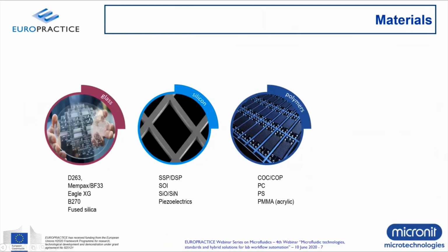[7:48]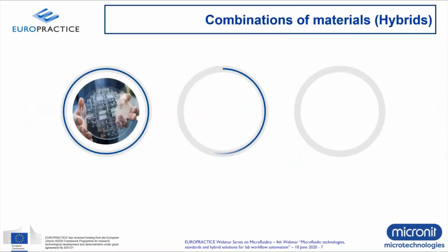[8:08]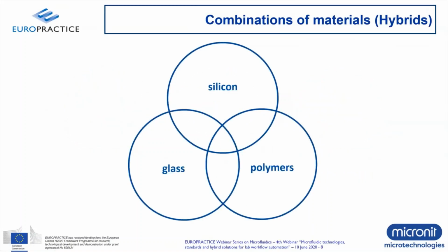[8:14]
So as said, these are the three groups of materials, but more importantly, I would say that if you can combine these materials together, whether it's a glass silicon device or a silicon polymer device, or maybe even a device consisting of all three materials, this is what we call a hybrid solution. And we strongly believe that creating those hybrid solutions will enable systems with a higher value. And that's also what I would like to address in the examples later on in this webinar. So as said, if you bring these materials together into a more advanced system, the challenge will be to find the right assembly and bonding technologies to create these hybrid devices and create the functionality that you need.
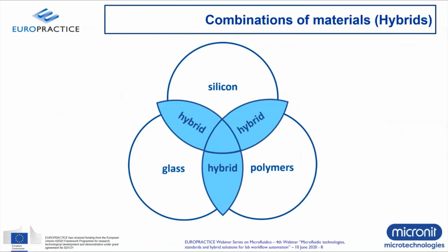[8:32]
So, some technologies that are used in this field. To start with, this list is certainly not comprehensive. It just shows some of the main processes used in the industry. And also here, I made a split between glass and silicon materials and polymer materials, because the fabrication technologies to make devices out of these materials are quite different. Glass and silicon use quite overlapping technologies coming from the semicon industry. Lithography-based processing, for example, etching techniques, both wet etching, which is commonly used for glass, as well as dry etching, which is commonly used for silicon.
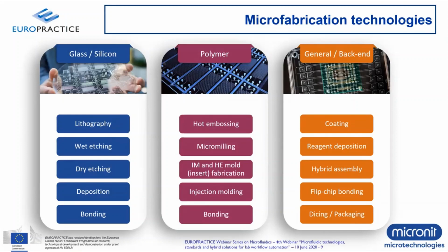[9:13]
Then there is a range of deposition techniques possible, whether it's a metal layer that needs to be deposited on the surface or some kind of silicon oxide or silicon nitride layer. So there's a range of processes that are available from the semicon industry to use for the microfabrication of glass and silicon. One of the most important steps, obviously, and I'll come back to that in more detail in the second part of the talk, is bonding technology. Bonding a silicon to a silicon or bonding a glass to a glass is quite mature and straightforward, but bonding different materials together is where we really create value. This is an area where there's a lot of growth in terms of new technologies popping up.
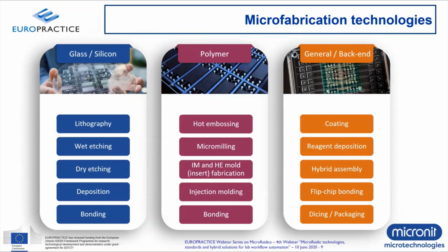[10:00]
Then looking at the polymer materials, as said, we need quite different fabrication techniques for that. Usually, when you talk about high volume manufacturing, injection molding is the way to go. You replicate at high numbers once you've created a high quality mold. But also for lower volumes and medium volumes, there are techniques available like hot embossing, which is a nice replication technique, and micro milling, which gives you the flexibility if you only need small numbers of prototypes to quickly act and create rapid learning cycles, rather than having to invest in a mold first and finding out later that the design was not okay.
So there's multiple replication techniques available to create a polymer device. And also here, the trick is in the bonding. How do you bond these layers together to make a closed chip that works in an autonomous way?
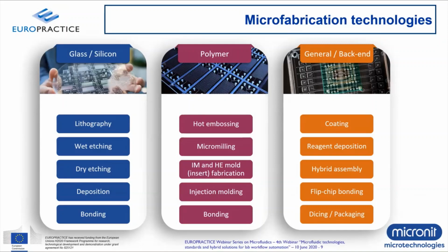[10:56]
Finally, there's a group of processes that you could call backend processing, where once the layers are microstructured and brought together and bonded, you need a number of elements to create functionalities and to create value for the solution. And you could think of coatings. These could be chemical coatings, these could be biological coatings, reagent deposition, which can either be done after bonding or prior to bonding, depending on the route that is chosen.
Hybrid assemblies, for example, adding a sensor or adding some kind of package or valve to the chip. Flip chip bonding, a common technique, of course, from the semicon industry, which you can use also for microfluidic devices to integrate your sensor into your microfluidic package. And also there, I have some examples later on. And then finally, you need to dice or separate your product and package it in a proper way. So these are all considered to be back-end processes that you need to create your product.
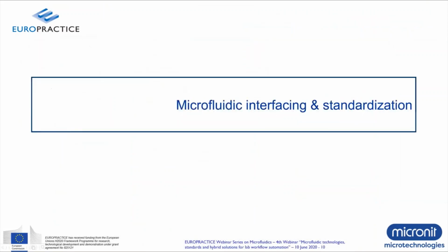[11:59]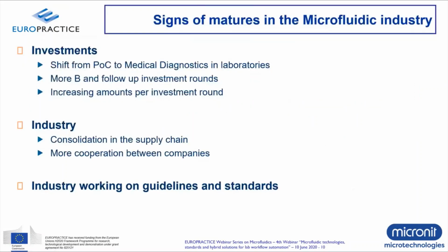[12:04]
So let me continue then with the topic of microfluidic interfacing and standardization. Now, if we look at the microfluidics industry, we see signs of maturing. And clearly the investments are becoming more serious with a shift from point of care to medical diagnostics. And this actually automatically means that higher investments are involved and that the investments per round are more serious. So the money is growing, and this means we have to start seriously thinking about how to consolidate in the supply chain and how to cooperate between companies.
And you could really say that the driving force for standards in the industry is created by the market itself. And that's also why standardization is relevant and why we should look at guidelines and standards to create a medical device from a microfluidic product.
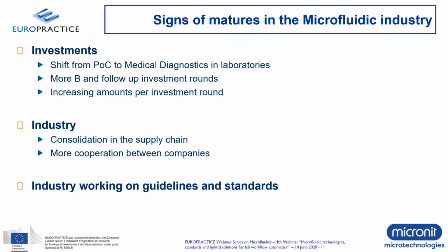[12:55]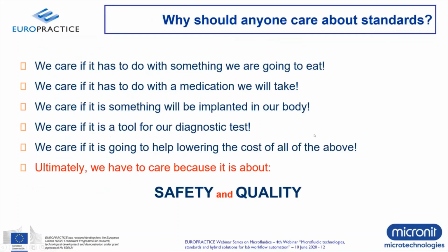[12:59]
Now, let me continue by saying, in general, if we look at standards, why should we care about it? It's a general question to ask, but there's a number of answers, obviously, you could think of. If we look at medical devices, for example, you care about what is implanted in your body or what kind of medication you need to take. Or if you do a diagnostic test, of course, you would like to have a reliable test and know that the result is actually the result it should be.
Also, cost is always an important factor. But I think bottom line, maybe even more important than cost, is we care about safety and quality. So looking at a diagnostic or a medical device, we want it to be safe and we want it to have the right quality so it delivers a reliable result.
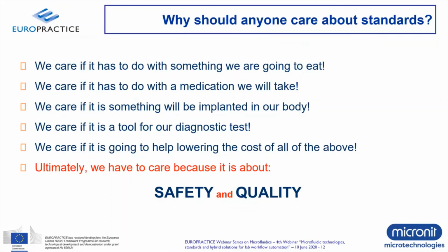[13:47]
Now, if we look at the definition of standardization coming from the Commission of the European Communities, I'm not going to read out the definition. You can see it on the slide, but I think there's some keywords to add here. First of all, it's all about cooperation, voluntary cooperation in the industry, between consumers, between public authorities, between suppliers, and it's based on consensus. If there's no consensus on specifications or requirements for a medical device, it's hard to start a standardization process. Secondly, if you standardize, it needs to be interoperable.
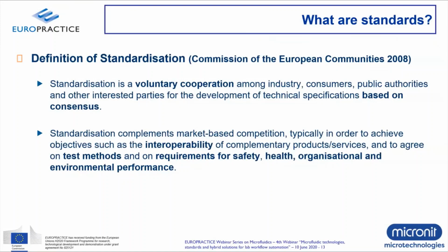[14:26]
So interoperability is really key. Otherwise, there's no complementary driving force there. And companies can cooperate, but if there's no exchange between, let's say, connectors, for example, or interfacing solutions, it's still an isolated product, and you cannot use it for other systems. And they're also looking at test methods and the requirements for safety and health are really relevant. So here, clearly stated, standardization requires cooperation between companies, and it also requires an interoperable solution.
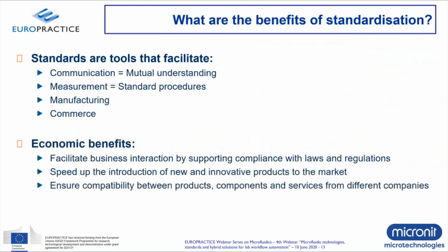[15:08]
Now, what are the benefits for standardization? Some, I think, I already mentioned. Benefits with aspects like communication, standard measurement procedures, and that has already also been discussed in the previous webinar, manufacturing and commerce. But at the end, you could say, let's focus on the economic benefits. Why should we standardize? Well, we want to facilitate business interaction and also comply to the regulations out there, especially looking at medical device development.
And secondly, and I think maybe even more importantly, standardization will enable a speeding up of introduction of new products to the market. If you use standardized solutions, your time to market will become shorter. I think that's really a key message to learn here. And also it ensures the compatibility between products from different companies. That's referring to the interoperability I just mentioned in the definition.
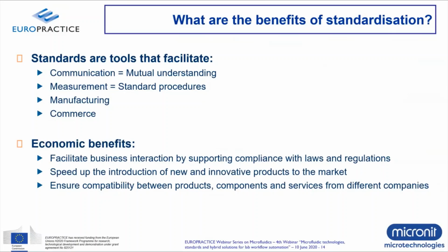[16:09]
But there are challenges, obviously, especially if we look at the microfluidics field. Each life science application is based on a different kind of technology, sensing technology. Each company has its own IP and there's patent restrictions. So companies need to work around patents. If you talk about production schemes, if you talk about integration of technologies, and we really need to understand the
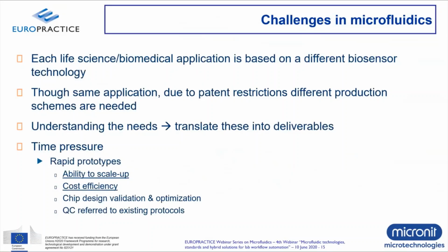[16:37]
needs of our customers. As a microfluidic developer, a customer comes to us and says, well, we have an assay or a test and we want to make it transfer into a microfluidic product. You have to translate those requirements and needs into a real product, into deliverables. And that's a challenge in itself.
And then last, but certainly not least, there's always the aspect of time pressure. Companies want to hit the market, they want to move fast, and they need rapid prototypes. But creating a rapid prototype doesn't always mean you're able to scale up. That's a different thing. So you need ability to scale up and you need a cost-efficient process. And for that, standardization will obviously help a lot.
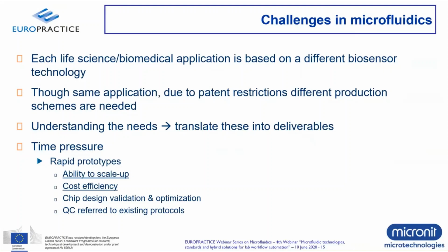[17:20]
Now, I've taken two examples from the semicon industry provided by Mr. Feplin from CEA-Leti that show nicely the link to what we are talking about in terms of interfacing. Here you see a classic, I would say, connector solution coming from the semicon industry, USBs. And why do I use this example? Because I want to stress that standardization does not mean you need one unique format, which is the same always.
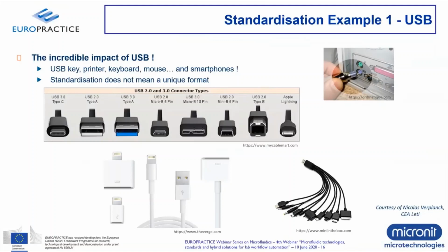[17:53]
It can be different connectors, but if you standardize the protocols and you have a number of products, which makes it interoperable and interchangeable, it's still a standardized product. As you can see with the USB connector. There's many variations there, but they're all standardized and can be used for specific equipment all around the world.
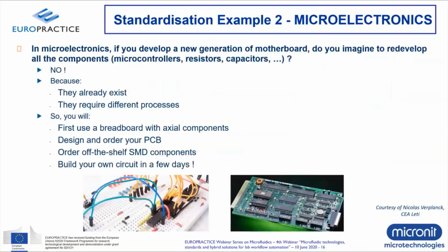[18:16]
The second example, also coming from the microelectronics, is obviously the PCB, the motherboard in computers, in smartphones. Basically, you can create a motherboard with modules mounted on top of that that are all standardized. So if you want to create a new generation of motherboard, you're not going to design and develop all components individually. Again, you have your toolbox of microcontrollers and resistors and capacitors, and you want to combine them in such a way that you can create a new product instead of having to go through customization of each module every time. So I think we can learn a lot from that. And you'll see also in some of the examples later on that we're going to discuss about fluidic connection boards, for example.
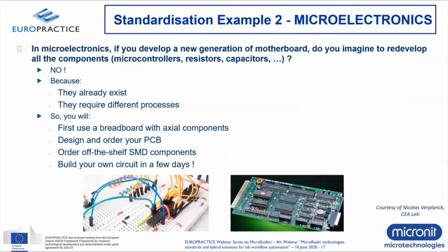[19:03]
Now, if we look at the timeline of creating interfacing standards in the microfluidics industry, this is a rough sketch. Going back in time about a decade ago, companies were using interfacing solutions, each being unique for their own components, sold as off-the-shelf components, but for their specific format. So very much company-specific. And that will not work if you want to standardize globally. So you need some kind of cooperation there between companies. And that's where the MFM
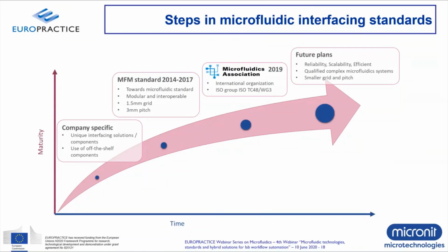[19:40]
project came in, a big project that ran for 4 years starting in 2014, where companies decided, and also institutes and universities, to work towards a more common standard in terms of interfacing. And this has now resulted recently, last year, in the foundation of the Microfluidics Association, where these companies work together, companies from industry, but as I said, also institutes and universities, regulatory companies, to create an international organization that works towards ISO standards, protocols, measurement protocols, and all the things needed to make sure that standardization is taken seriously in the microfluidics development. And looking at the future, focus areas are reliability and scalability.
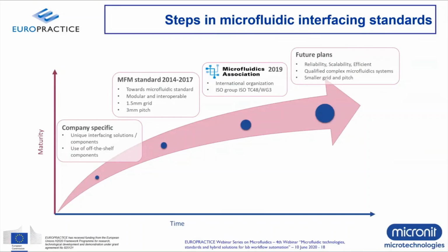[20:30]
I mentioned that already in the previous slides, and also to create complex microfluidic systems that are qualified and that have a reliable and even predictable result. Now, if you again make the link to the semicon microelectronics industry, and you look at, for example, the timeline of creating an integrated circuit, a processor for a computer, you can see how it all started. And if you follow that line, you could say that today microfluidics, compared to, let's say, what has happened in microelectronics, is a motherboard with a spider assembly. All the different components are arbitrarily used and connected, but there's no real standardization there.
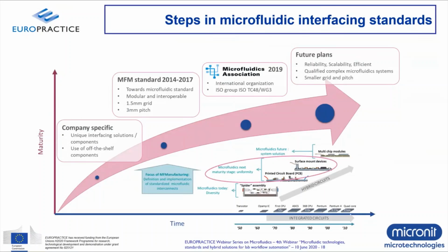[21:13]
And we would really like to work towards a next maturity stage in creating more uniformity, as you can see in the pictures that are encircled. And then ultimately, if that is standardized, if you have your components that are standardized, you would like to work towards system solutions. But there's a way to go, and we're certainly not there yet.
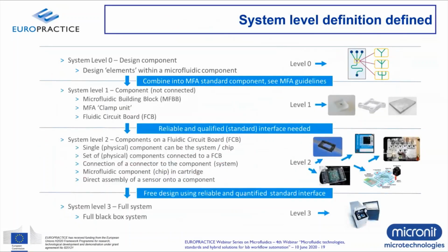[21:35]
Now, looking at standardization from a system level, you could say there's basically four levels. Starting at the top, level zero, you need to start standardizing your design components. So really, microfluidic components inside your chip can be standardized. And then if you have reached that level, you can continue towards building microfluidic building blocks in the next step.
And these building blocks, whether it's a chip or whether it's the clamp unit or the circuit board, should be standardized as well. If that's the case, you can start building your product or your consumable, modular based on a fluidic circuit board or using standard interfacing techniques that can then be connected to your system. So every step taken brings you closer to a standardized system. And if you have standardized these levels, then you're ready to start designing a reliable system that becomes predictable as well, because you're using standardized components. So it's much easier to develop a system that creates a reliable result.
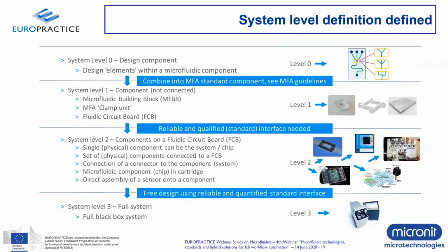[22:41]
Now, let me switch finally to some of the interfacing solutions that are out there today and that are also the topic of standardization within the MFA platform. We distinguish between two kinds of connections if you talk about microfluidics connected to the outside world. The first one is top-down. That's the most classical approach known in industry already for quite some time, which basically means you have an easy access on a flat top surface and it can be smoothly sealed towards the vias or the through holes in the chip. But you need relatively large areas for sealing.
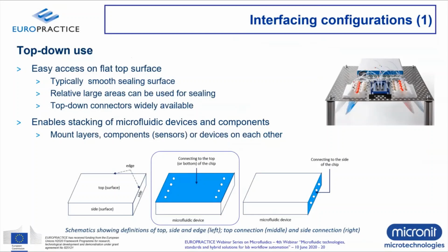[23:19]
Top-down connectors are widely available in many different sizes and types. And also the advantage for this kind of connection is that you enable stacking of microfluidic devices. So multiple layers or components, even sensors, can be mounted on top of each other. And you see an example in the picture at the right.
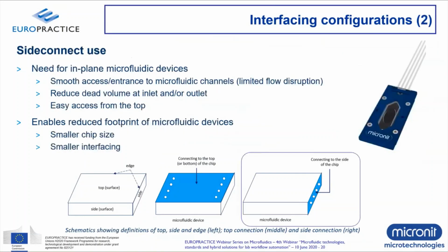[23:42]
Then the second type of interfacing known in the industry, we call it side connect. It's also known as edge connect, meaning that you basically have an in-plane connection to your microfluidic device, as you can see in the schematic below. This enables a smooth access and entrance to the microfluidic channels. And very importantly, especially if you look at applications using cells and droplets, there's a limited flow disruption because you're working in plane. Also an advantage there is that there is much less dead volume at the interfacing areas,
and there's an easy access possible from the top because your top surface is completely flat and clean, and you could enter or access with a microscope or some kind of fluorescent detector in an easy way because there's no interference with tubing or things like that. This also enables a reduced footprint of your chip because the in-plane connectors avoid using footprint on the top of your chip.
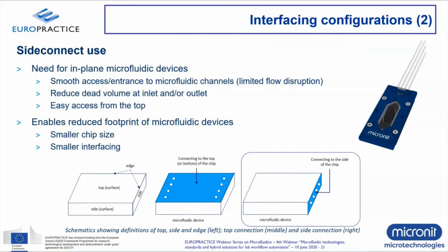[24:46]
Now, here are some examples of these edge connect connectors coming from the industry, the suppliers in the field. Also, this list is not comprehensive. It's just to show you that there's multiple solutions, and I have to say unique solutions in the market. And this also brings me back to my previous point. Still, these are very much company-specific solutions that are not interoperable.
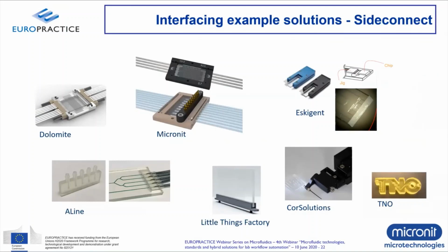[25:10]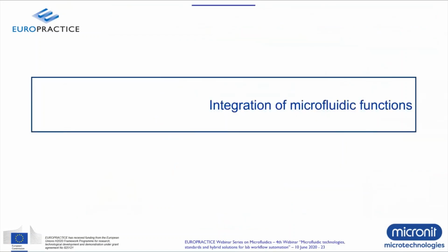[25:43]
And we should really work towards standardization to make these kind of solutions interoperable between companies and to make it easier for our customers to design a microfluidic chip and buy some kind of interface and connect at company A or B. It doesn't really matter because it's the same pitch, it's the same format, and you can use both. So it basically brings me to the end of this section, saying we need standardization in the microfluidics industry, but as you can see with these examples, we're certainly not there yet. I'd like to continue with the second part of the webinar to talk about integration of microfluidic functions.
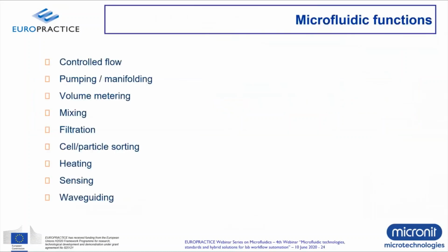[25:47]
There's multiple functions that you can add to your microfluidics. Let's just go through them quickly and then I'll come back to some of them in the following slides. Controlled flow, pumping and manifolding, volume metering, mixing of different buffers or reagents, filtration, for example, used for filtering blood cells, cell and particle sorting, heating and sensing, which is commonly done by electrodes if you need some kind of an assay, a PCR based or immunoheating, and waveguiding. And some of these I'll address in more detail.
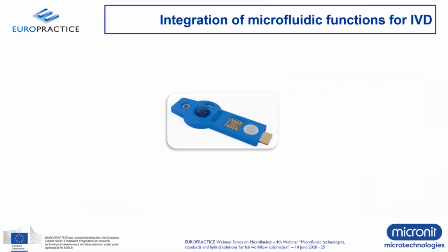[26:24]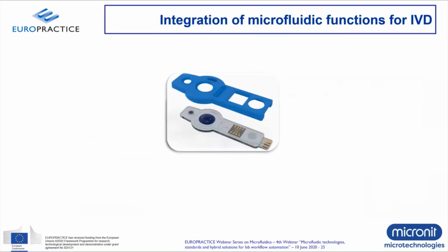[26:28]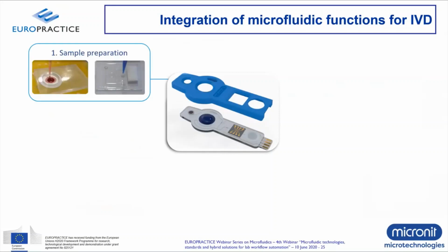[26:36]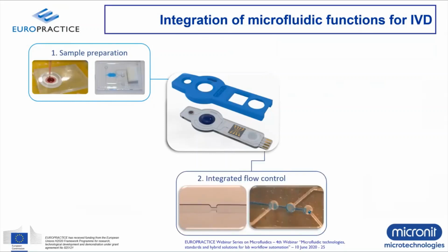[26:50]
Now let's take an IVD cartridge as an example. So this is a concept that you can see here. And what kind of aspects are relevant if you want to integrate microfluidic functions into this cartridge? First of all, we start with sample preparation. We need functions to prepare the sample for the measurement or the detection. And things like filtration and volume metering become relevant. And I'll come back to that in further detail.
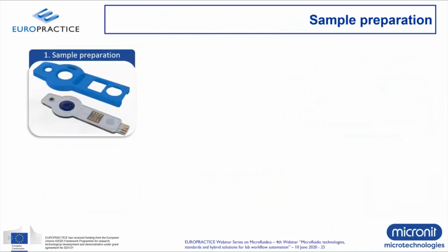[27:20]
We need some kind of flow control, whether it's passive or active. The fluid needs to flow through the device in a controlled way. We need reagents and we need, in most cases, surface functionalization to make sure that the biology runs in a proper way and that there's no adsorption of materials that you do not want to absorb to the surface, for example. And then finally, we need some kind of sensor or detector which is integrated into your cartridge and actually performs the measurement. Now let's start with sample preparation.
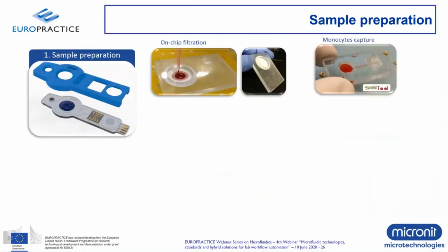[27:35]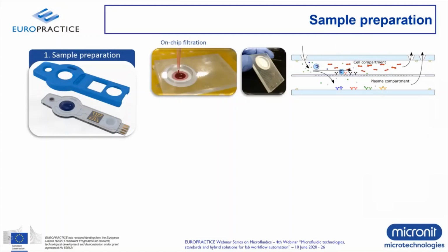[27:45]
I mentioned already, filtration is one of the ways to prepare a biological sample like blood. And here's an example shown with just a commercial filter that is integrated into an IVD cartridge. But you could go one step further even by creating a membrane that captures specific cells from the blood, in this case monocytes, where you create a two-layered system with a membrane in between. The membrane basically captures the monocytes by using specific receptor antibody interactions. The plasma is going through the membrane to the bottom side and the red blood cells are just basically filtered out of the solution. So in this way, you end up with the cells that you need for your analysis.
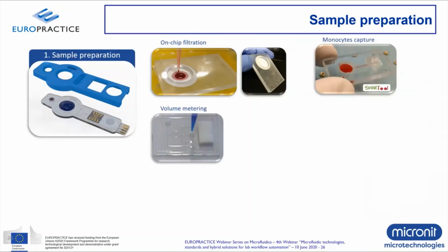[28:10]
Now, other techniques very relevant for sample preparation are how can we control and quantify the volume of interest? If we use a pipette, for example, you will be able to pipette a specific volume into your device, but it's not accurate enough. If you want to do a quantitative measurement, and that's what we are aiming for with more complex devices, you need also a quantified accurate volume. And for that, you can use volume metering techniques as shown in this example, where a reservoir has a very specific size. And if you get rid of all the excess material by using this kind of capillary forces, as you can see in the movie, you create a very defined volume to enter into your microfluidic cartridge for the measurement.
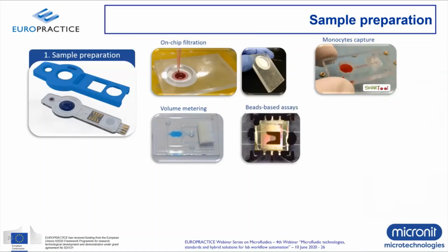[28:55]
Then there is beads-based protocols that can be used for sample prep, quite commonly used to absorb DNA or proteins to your bead surface, to do washing, lysing, all these kind of aspects that are needed to prepare your sample for the detection. And the nice thing about magnetic approach is that you can manipulate these beads by using magnetic force externally, and this is a very commonly used technique in this arena.
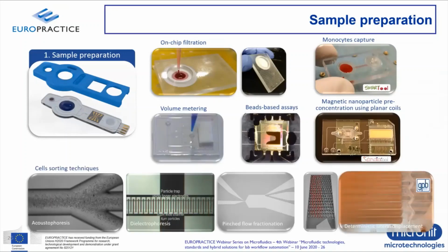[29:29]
Then a bit more advanced techniques that can be used is if you really look at cells, for example, you can use sorting technologies or concentration technologies by applying different physical fields or using different physical principles to select the cells of interest. And here you see a few principles. I'll not go through all of them in detail. The first one is using acoustic forces, where you can concentrate a beam of cells going into a specific channel based on size and geometry.
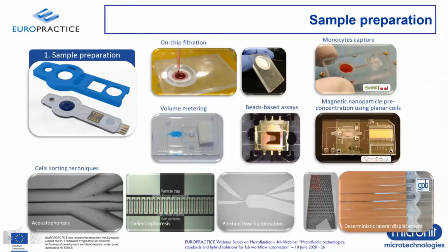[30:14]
And then the last one I'll mention specifically, which is the deterministic lateral displacement, where you're basically using the coin sorter mechanism, as you can see in the animation, to select cells or to sort cells based on their size. In this case, this technology is used, for example, to select red blood cells or white blood cells, I should say, and isolate them from red blood cells, as you can see in the movie. So really, we see a growing need for these kind of advanced functionalities in microfluidic devices.
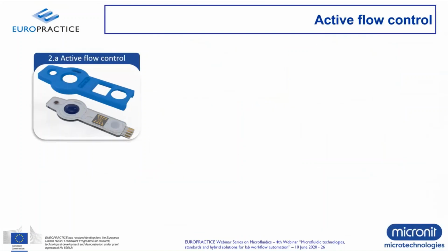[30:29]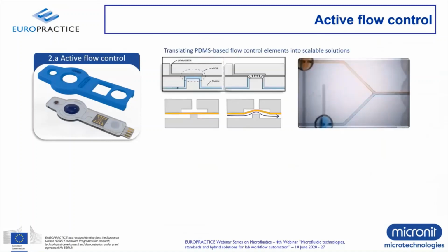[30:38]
Now let's continue to the second microfluidic function that is really relevant and actually the motor of your microfluidic device. How can you control your flow? There's two ways to do that. Actively, which is shown in this slide, by using integrated valves. And there's many solutions in the industry. I'm just showing you the concepts here, normally open valves or normally closed valves, in which a membrane is either pressed down to close your fluidic channel, or the membrane has to be opened by applying fluidic pressure to close or to open the valve.
And you can see this principle in the movie. You can play with valves, and the colors show that you basically create a switch this way, and your microfluidics can be really controlled. When do you need which reagent or buffer to enter a certain channel? So this technique allows you to control your flow inside the different areas of the microfluidic chip.
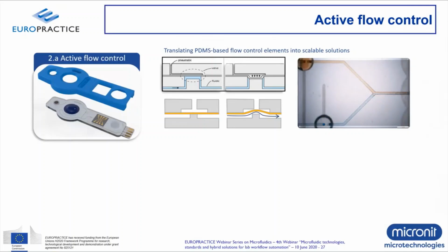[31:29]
And here are some examples in practice where the valves are in action. Basically, you can see you can also use it as a pumping device. These valves are used typically also in more complex fluid systems for cell culturing and hybrid systems that I'll come back to later in this talk.
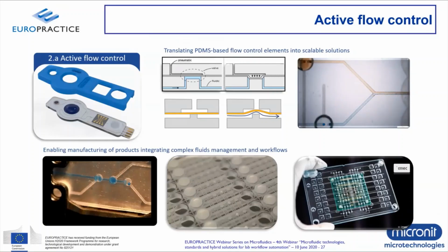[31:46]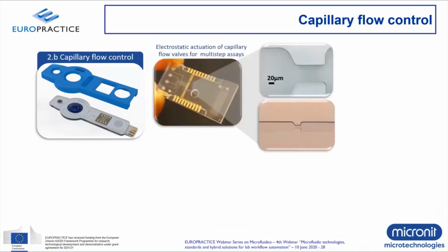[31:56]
Then there's a second type of flow control, which is interesting, which is called capillary flow control. So in this case, valves are not being used, but you're using a more, let's say, passive way to control your flow. And it's shown in this movie. This is an example of using electrostatic forces. So you need electrodes for that. And you can create a capillary stop in your channel, as you can see the blue liquid stopping at a
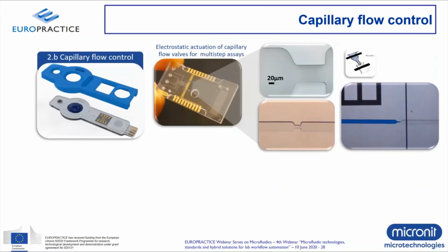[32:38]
certain area. And to make sure the flow can continue, shown in this next movie, you need to apply an electrostatic pulse. And this pulse creates a small electric field, which basically sucks the fluid into the second channel, as you can see in this movie. It's a very nice and delicate principle, because in many cases, for making a microfluidic product, you will need some kind of electrode that does detection or sensing. And these electrodes, as you can see in the chip example here, can also be used to control your flow.
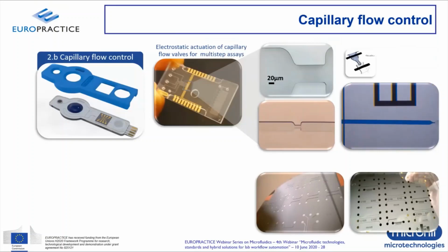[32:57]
Now, on a wafer scale, in terms of production, it looks like this. You have your electrodes on a wafer, you have your vias and channels, and you can really create devices on a wafer scale level. For example, for an immunoassay-based assay where these kind of actuators are really efficient.
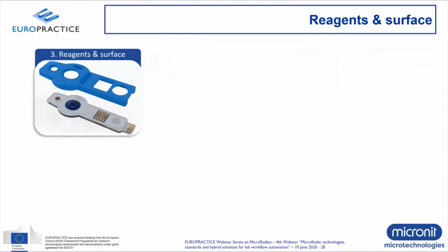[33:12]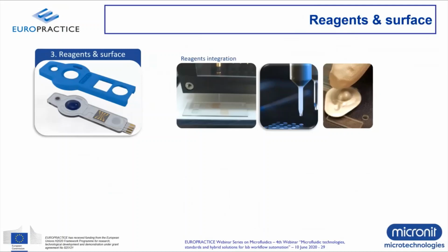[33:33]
Then looking at reagents and surface functionalization, in many cases, especially when you use standard plastics or standard glass substrates, if you use biology, you will need to somehow work with surface functionalization, and also you need to add some specific biology or reagents to your product, because otherwise you cannot run the assay. Now, there's different principles there. If we look at reagents integration, you could add a pouch, for example, on your cartridge. But you could also do things like biospotting of lyophilized reagents inside your chip that are then dissolved in your buffer solution or reagent solution when the test is being executed.
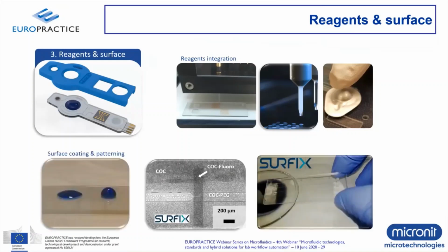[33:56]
And looking at surface coatings, for example, this is a nice example coming from Surfix, a surface functionalization company. You can play with the wettability of your surface. You can even create hydrophobic stops, as you can see in the movie playing, where you add a fluorinated coating to stop your flow at a specific point, which can then only be activated again if you push it through that barrier. And in this way, you can also play with your surface chemistry inside your chip.
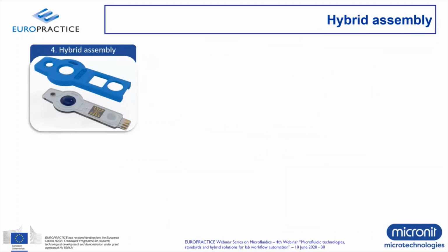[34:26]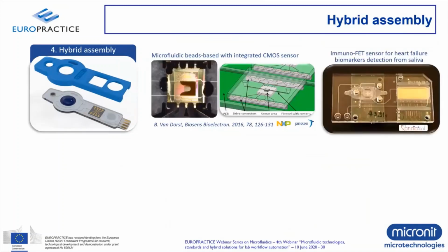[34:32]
Then last but not least, some examples of hybrid assembly, and I'll come back to that later. As I mentioned before, sensor integration is really key, because at the end, if you've prepared your sample and you've been able to wash it and to prepare it for the test, you need some kind of detector or sensor that actually does the measurement. And in many cases, this is a sensor coming from the industry, from the semicon industry, it either being a CMOS part or some kind of CCD detector, an optical sensor.
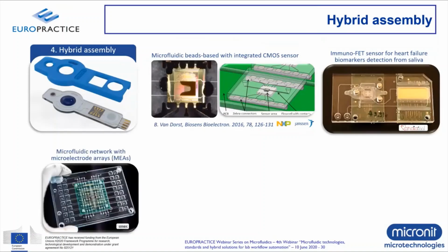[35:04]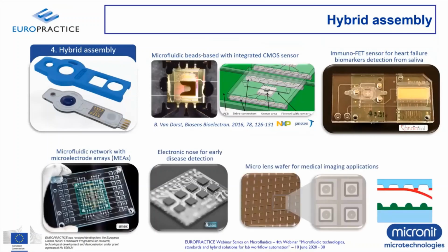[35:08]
Here are just some examples. We've been working with FET sensors. We've been working with gamma luminescence based sensors. So there's quite some examples there in the market, and some of them I'll show at the end of the talk when I talk about the examples of hybrid solutions. For example, the electronic nose, where we basically have multiple electronic or silicon chips mounted onto a surface.
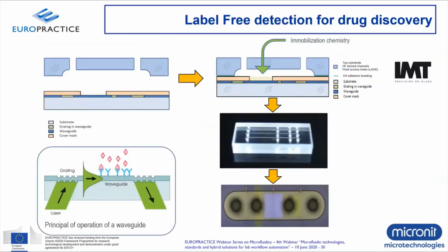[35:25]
Now, finally, one of the microfluidic functions that is also of interest and is growing in the market as well, is if you integrate waveguides, optical waveguides, inside your microfluidic chip. And this slide shows the principle of that. So we have our microfabrication of a layer of glass, for example, and you can add an additional layer with a grating and a waveguide that enables you to look at the surface selectively.
Now, the nice advantage of using this waveguiding technology as a detection method is that you decouple the excitation from the fluorescence detection. So we have a laser beam coming from the bottom that goes through the planar surface of the device and is exiting at the other side using this grating technology. And then we have the fluorescent detection of, let's say, the antibody reaction that is coming from the top. And in this way, you can nicely decouple it.
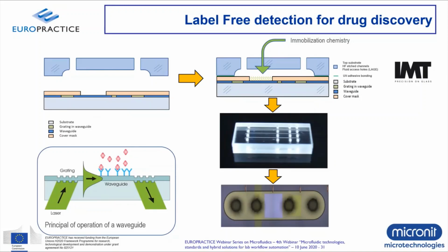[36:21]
Another advantage is that you only address the analytes that have been bound on the surface. So it's really a very surface sensitive technique, and you don't need any labeling for that. But it's also good to note, and this counts for all the technologies out there for detection, you need selective binding chemistry to make sure that you immobilize the right analytes that you want to look at and not have non-specific or non-selective absorption. So waveguiding, as said, is a nice label-free detection method for drug discovery applications, for example.
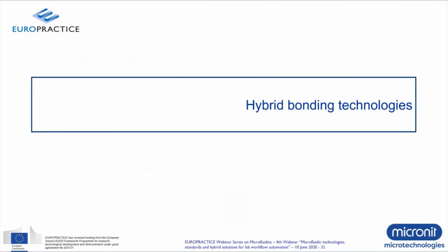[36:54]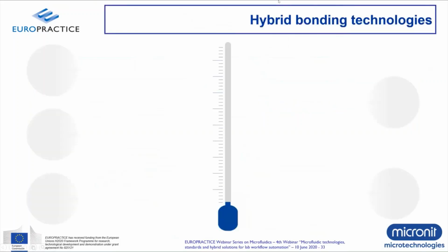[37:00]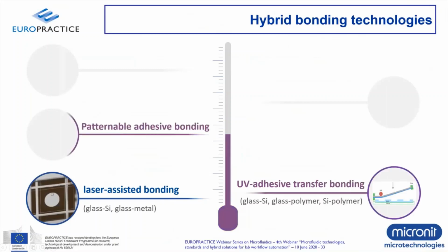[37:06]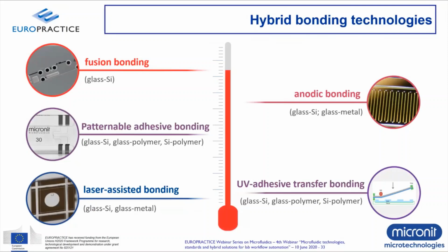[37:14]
Now, this brings me to the next section, which is hybrid bonding technologies. What kind of bonding technologies do we actually need to be able to make our hybrid devices? I've mentioned five groups of bonding technologies. I'll only address a few in the following slides. But if we start from the bottom, low temperature, room temperature bonding by means of laser assisted bonding or by using UV adhesives, for example.
Then we have techniques that are more lithography based, like patternable adhesive bonding. And if you raise the temperature further, commonly used techniques also in the semicon industry, especially making MEMS devices, anodic bonding of glass to silicon and glass to metal. And fusion bonding is a commonly used technique if you want to directly bond two surfaces together, but it has the drawback of using very high temperatures. So all these technologies, hybrid bonding technologies, can be used to bond one type of material to another type of material.
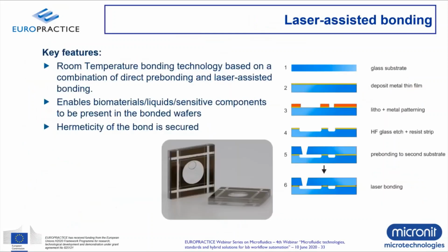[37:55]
Now, lasers, here's some more detail on that. Why is this of interest? The nice thing about using a laser is that you only need a local seal and that the rest of the chip is basically untouched. So you can be very accurate in sealing off the areas that you need to seal off without affecting, for example, the biology that is inside the chip.
It's also a method creating a high bond strength, even such that it creates hermeticity, as you can see in the picture, where basically a droplet of water or liquid is inside this lens, and you can see the void still there to prove that there's actually liquid encapsulated inside this device by just using laser sealing. So it's a nice technique also for sensitive components and biomaterials.
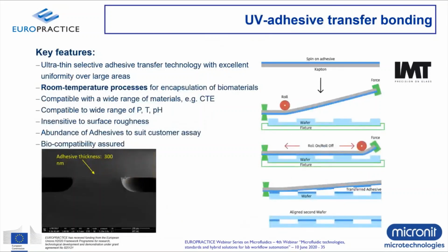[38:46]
Then another room temperature technique quite commonly used is UV adhesives. But you need to use a technique called transfer bonding to be able to apply those adhesives to your surface. And that's explained in this slide. The roll-on principle takes care of basically transferring, as it's called, a very thin layer of adhesive to the areas that need to be bonded. But as you can see in the schematic, the areas that basically form the fluidic channels are not covered with adhesive.
So it's a nice way of selectively covering the bonding areas and using UV light to bond your surfaces together. And these can be different surfaces. And at the end, you have a nice result, as you can see in the SEM picture, only with a very thin layer of adhesive present. So there's biocompatible solutions there. And as said, the advantage is that you can create or bond different materials and be biocompatible.
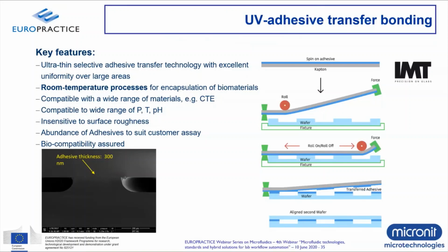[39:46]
Then we look at techniques like patternable adhesive bonding. We see that there's materials in the market like dry film resist, which enable to use lithography-based processes, not for using the resist as a masking material, but for using the resist as a spacer, a microfluidic spacer. And that's what's shown in this picture, where basically you laminate this material on top of your device. It's a dry material, so there's no liquids involved, and you can pattern it by using standard lithography techniques.
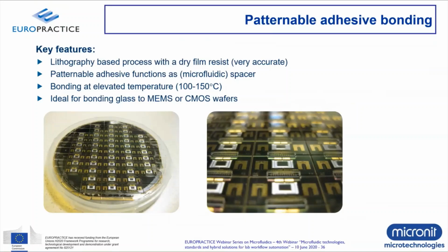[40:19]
You do need elevated temperature, around 100 and 150 degrees, but this is still very much applicable to MEMS and CMOS solutions, for example. And that's also where we see that this type of bonding technology is used, as you can see in the pictures in the bottom. Another advantage of this technique is that it can be applied on a wafer scale.
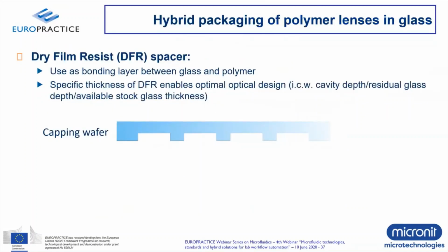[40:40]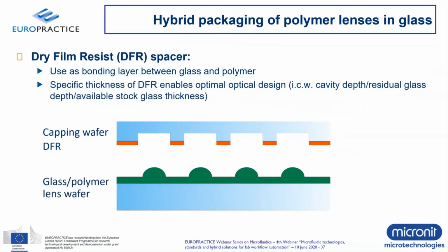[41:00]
And how does it look schematically? So we have a capping wafer that we can microstructure in this case. We apply by lamination this dry film resist layer. This is then being lithographically processed to make sure that only the areas of bonding have this patterned adhesive. That's why it's called patternable adhesive. And then you can bond it to any other material.
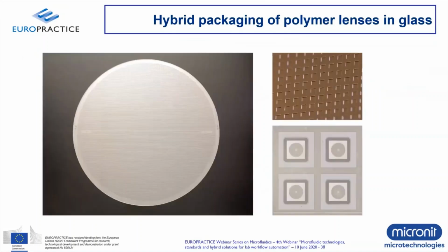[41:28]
For example, in this case, a polymeric lens, which is made out of plastic, and you can seal those together at elevated temperature. So what is the advantage here? By using a dry film of a specific thickness, you can really tune the optical design, in this case, of this lens, because you know exactly what thickness you will be bonding to, and you can play with these properties in an accurate way. And this is then the result.
Typically, as said, you can do this on a wafer scale, 200 millimeter wafer containing a lot of these lenses, and the right pictures show some microscopy pictures of how it looks like in a close-up. And also here you create a firm bond to protect the camera from the outside.
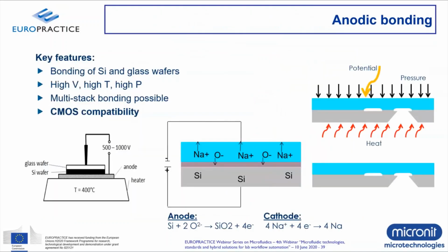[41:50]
Now, a last technique mentioned is a bonding technology called anodic bonding. I think that's more commonly known in the semicon industry, especially looking at MEMS devices. Drawback there is you need temperatures up to 350, 400 degrees, and you need some pressure to be able to have those wafers into molecular contact. But it's a commonly used technique, and it's CMOS compatible. So it allows you to bond an optical surface like glass to a silicon wafer process surface and create an optical MEMS device.
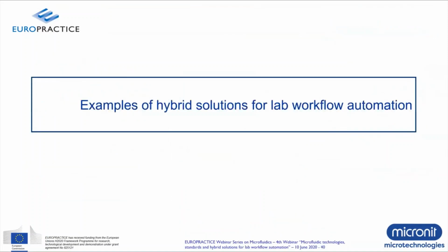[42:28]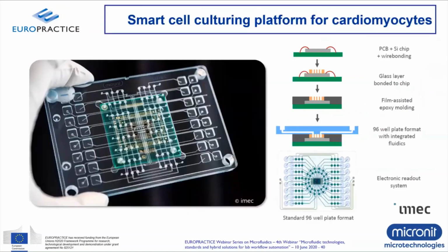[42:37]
That brings me to the final section of the webinar to show you three examples of how these bonding technologies end up in a product, in a solution. And some of the pictures you've seen already, but I'd like to address it in a bit further detail. So here you see a device that is used as a smart cell culturing platform for cardiomyocytes, basically heart cells. And the nice thing, and also the reason why I show this example, is that here all the hybrid bonding technologies and materials come together in one device.
If you look at the schematics, you basically start with a MEA chip, a multi-electrode array chip, that is mounted onto a PCB with standard techniques. It can be wire bonded. And then after it's being encapsulated, you can also integrate a glass layer, which is the optical interface and the fluidic interface towards the cartridge that you put on top. So there's a glass layer in between that takes care of the interfacing between the MEA chip and your plastic cartridge. And then a standardized molded plastic cartridge can be mounted, which can be, for example, a 96 well plate format commonly used in that industry.
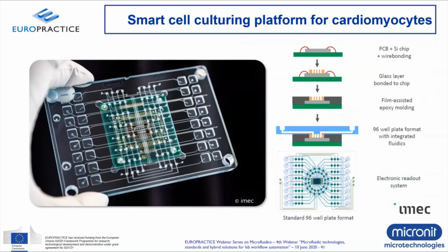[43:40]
And you can take care of your entire microfluidic structure, make sure that all your reagents and your buffers and samples can enter that microtiter plate and are accessed or basically pointed towards the MEA chip in the center, as you can see in the infrastructure at the bottom picture. And that's, of course, where the magic happens. Cells can be manipulated, can be detected on the multi-electrode array. But really, this device enables an automated way of analyzing these kind of cells without any manual intervention, except for the fact that we need to pipette the sample, which can also be done by an automated robot. And these are typically examples that the microfluidic industry is now collaborating also with the semicon industry, IMEC being involved. And so it's a good way of showing that hybrids really are possible technology-wise.
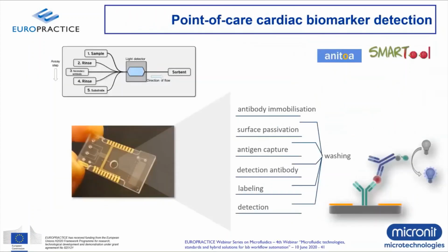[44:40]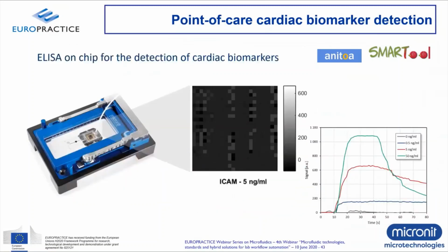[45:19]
A second example is looking at point of care. If we would like to design an immunoassay-based assay to detect cardiac biomarkers, for example, troponin, you need a number of steps that I've already addressed a little bit in one of the previous sections. You need to work with reagent immobilization. You need to work with various rinsing steps. So if you consider an assay like an ELISA, which is commonly used in this field of immunoassays, if you can bring all these functions together, you can create a real product that looks like this,
where the sensor, in this case, a CCD detector coming from Anitoa, is centered into the microfluidic chip and can detect very small volumes of these cardiac biomarkers in the range of a few nanograms per milliliter, as you can see in the graph. And the sensor lights up because it's a chemiluminescent reaction, and it basically transfers the light signal into an electronic signal through the CCD detector, which allows you to measure very sensitive concentrations of these biomarkers that are usually present in the blood in very low concentrations and are indications of, let's say, early phase heart failure.
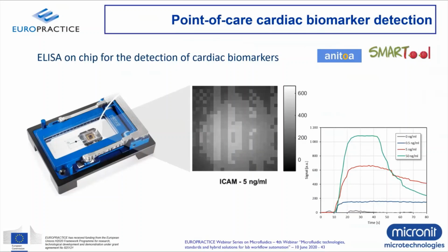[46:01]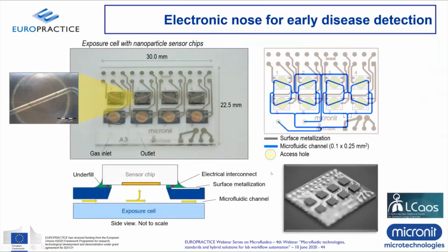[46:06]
Then a last example, the electronic nose, now shown in a bit more detail. I've shown one of the pictures already before. How does this work? Well, basically also here, you see that different technologies are coming together. In this case, we have a sensor chip made out of silicon that you can see blown up in the picture at the left. And this sensor chip contains a nanoparticle-based sensing technology, and it needs to be somehow connected to a microfluidic circuit. And that's what you see in the cross section at the bottom.
We have a microfluidic chip that has surface electrodes on top of it. It has the fluidic infrastructure, and it is accessing the sensor chip in the specific areas where an opening is created. And now, to make sure that the chip interacts properly with the microfluidic infrastructure, you need to electrically interconnect and fluidically interconnect the sensor chip with your microfluidic glass chip. And that's done by using techniques like flip chip bonding, underfilling, commonly known in the industry. And in this way, your electronics is directly connected and interacting with your fluidics, as you can see in the cross section.
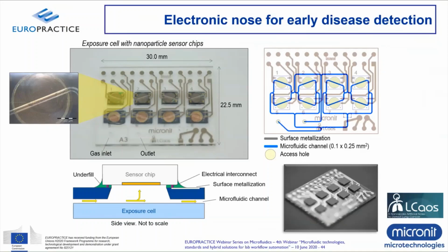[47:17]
Now, this allows you to mount multiple of these sensors onto one device that are all electronically connected to the I/O pads at the perimeter of the chip, and you create a fully autonomous sensor which can be mounted into an analysis tool, and in this case it's used for analyzing exhaled breath to detect early phase lung cancer, with patients, for example, that are smoking and want to know whether they are developing something. So it's a way of very sensitively measuring biomarkers from breath by using this technology. And it's been a part of a project that we did a few years ago together with the industry and the academia, and it created these kinds of solutions.
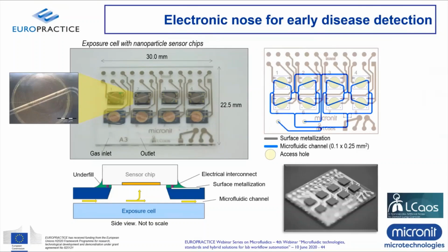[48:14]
So with that, I would like to summarize the webinar, coming to the end. A lot of topics discussed. I would like to give you three takeaway messages. One being that microfluidic interfacing standards are relevant for speeding up product innovation and commercialization. Secondly, we see that integration of microfluidic functions and the use of hybrid bonding technologies are both essential elements if you want to enable lab workflow automation in diagnostics and life science applications.
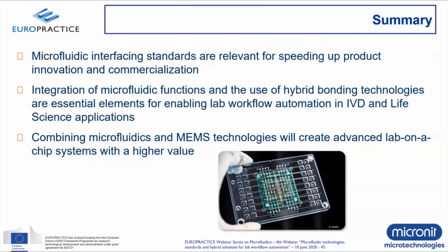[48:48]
And lastly, and that's actually what I started with in the introduction, combining the worlds of microfluidics and MEMS will create advanced systems in the lab on a chip field. And this will enable us to develop products with a higher value. With that, I would like to conclude this webinar and give the word back to Riet for the Q&A session.
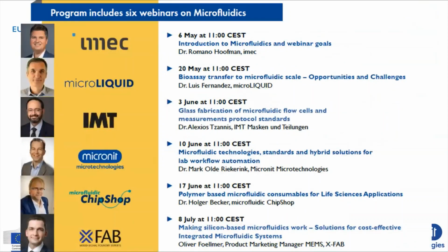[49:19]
Thank you very much, Mark, for this very instructive overview. Let's now indeed continue with a few more questions. As I asked all previous speakers, I'd like to pose the same question to you too. You already did touch upon it during the presentation, but could you please repeat your vision on what are, according to you, the main bottlenecks to be solved for a further growth of microfluidic devices and more market share?
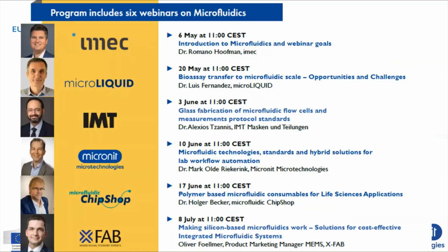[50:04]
Thank you, Riet. Indeed, this is a good and relevant question, and I briefly touched upon it during the webinar. What we see happening in microfluidics product development is that on one hand, because there's a lack of standardization, all companies come with their own customized solution. And if this solution does not result in a technically feasible product, then basically the product development stops and there's no alternatives available. But secondly, and maybe as important, the main challenge we see, and also a bottleneck, is making a feasible prototype that works based on technology that is out there, because there are many technologies that are offered today.
We enter into a phase of product development where we see it's feasible and we have a proof of concept. And companies become enthusiastic and then they want to invest to really make it into a product. And that's the critical phase, validating the product, replicating it in a reliable way, in a reproducible way, and making sure that the product is doing every time the same thing. That's really a challenge to hit the market.
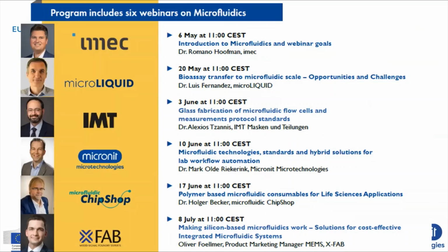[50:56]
And we see also that in that phase, many of the startup companies that have a new technology that they want to transfer into a product, that's where basically they find the challenge, and sometimes even have to stop because of investment issues. So I would consider that to be the challenge here.
Thank you, Mark, for your view on these main challenges. Another interesting question, which is related to your response, is the following. For standardization, what are the challenges in agreeing on specific formats? Because I can imagine that each company tries to push its own vision and technology.
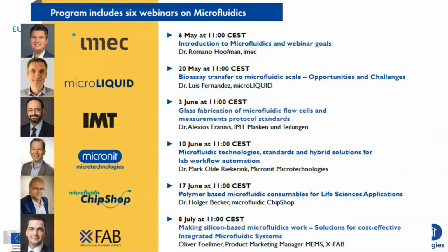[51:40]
True. That's indeed the case. And that's why we need a consortia like the Microfluidics Association, where companies sit together and talk about the consensus. So indeed, consensus is a key word here if you want to standardize, each company offering their own solution. And I think we've made some good steps there. If you look at what kind of things can be standardized and can be agreed upon between different companies.
For example, if you look at interfacing, what about your grid size and your pitch? So how much distance does a multi-connector need to have in between the individual connectors so it's interoperable? Just as an example, if a customer of ours or a customer of some other microfluidic company would like to develop a chip and they say, okay, can we use this or that connector? We need to make sure that using the right pitch in the right format helps in providing that customer with multiple solutions rather than just only a solution that we can provide. And I think that's the first step in the standardization.
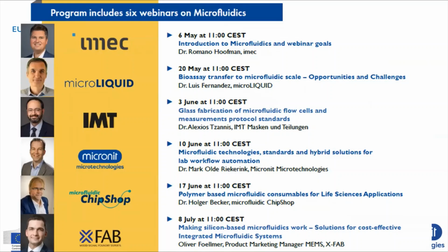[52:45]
Start small, make sure that interfacing of chips becomes interoperable, and thus a customer is more flexible in ordering parts from various companies. Okay, so it's indeed clear that collaboration between different companies will help us all to move technology further. So then one last question. It was also asked during the previous webinar, and I will probably ask it again next week, is how does glass compare to polymers in terms of cost and performance?
Yes, that's a very interesting one, especially for a company working with glass devices as well as polymer devices. This is a question often raised, of course, by our customers. The traditional answer would be, well, glass is more high-end and it's more expensive, and polymers are used for consumables and high volumes. Well, this is true to a part. It depends a lot on the application. If you have a specific application where you need to integrate different functionalities, some of that I've already shown, it's simply not possible to use either glass or polymer.
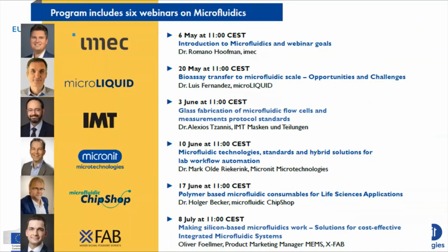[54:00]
So then the material choice is really driven by the application, less than by the cost. If you look at volumes, typically glass-based devices can be made on a wafer scale up to the tens of thousands, hundreds of thousands of parts per year easily. But if we talk about a low cost, high volume plastic consumable that needs to be run into the millions, then it's much more obvious to choose for a plastic solution. So I would say, it's not only about the cost, it's really about the application. What kind of functionality do you need?
Do you need optical and thermal performance? Then it's more obvious to go for glass. Do you need a consumable that you'll be able to replicate in high volumes for a point of care device? Then it's much more obvious to choose for a polymer solution. And I think what is key is that when a customer comes to start to develop their product, that they try to answer that question up front. What do we actually need for our application, and what options do we have, or does it need to be a hybrid solution, for example? That's what I would like to say about this choice between glass and polymers.
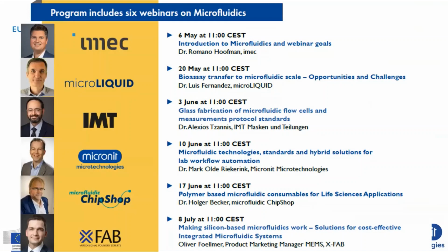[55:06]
Okay, thanks, Mark. And I believe that aligns well with what was said before as well. And I'm of course also curious to hear the response after the next session, which will be on polymer-based microfluidics.
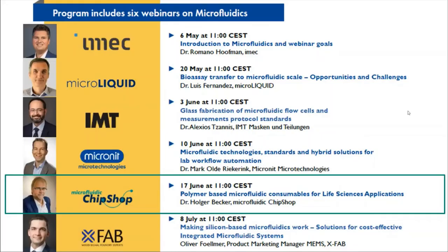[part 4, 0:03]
After glass fabrication methods and hybrid solutions, we resume with polymer-based microfluidic consumables for life science applications, and this work will be presented by Dr. Holger Becker of Microfluidic ChipShop.
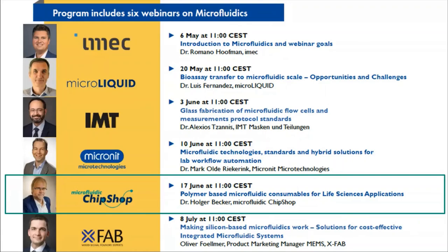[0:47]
Let me now introduce you to the speaker of today. Dr. Holger Becker is co-founder and CSO of Microfluidic ChipShop. He obtained a physics degree from the University of Western Australia and the University of Heidelberg. He started to work on miniaturized systems for chemical analysis during his PhD thesis at Heidelberg University, which he obtained in 1995. After 2 years as research associate at Imperial College with Professor Andreas Manz, he joined Jenoptik Microtechnique in 1998. Since then, he founded and led several companies in the field of microsystem technologies in medicine and life sciences, for which he also received various awards, with most notably a nomination for the Deutscher Gründerpreis in 2004.
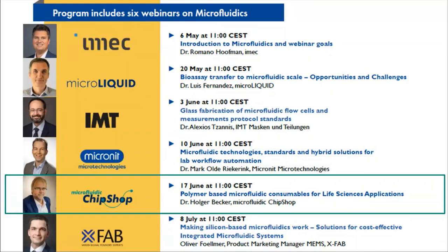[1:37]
He is the current chair of the SPIE Microfluidics, Biomems and Medical Microsystems Conference and serves on the advisory boards of many other health tech conferences. He is also a member of the editorial boards of Microelectronic Engineering and Micro and Nanosystems journals. In 2014, he was appointed as Fellow of the Royal Society of Chemistry in London, and in 2017, he has been awarded the Ehrennadel, a badge of honor, of the German Physical Society. So quite an impressive resume, and I believe we all look forward to this talk. So Holger, the floor is yours.
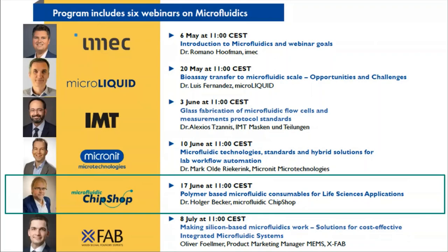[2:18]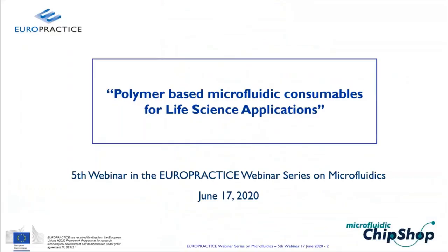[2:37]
What I will be talking about today indeed is polymers as material for microfluidics and especially for microconsumables in life science applications. Here's the outline of my talk. It will be first a little bit more coming from the industrial perspective, looking actually into cost structure. So my first two chapters will indeed look a little bit more into the economics of microfluidics, and then of course into why do we want to use polymers, and of course then what are the different methods and technologies for polymer microfabrication. And I would like to sum up with some lessons learned in this field.
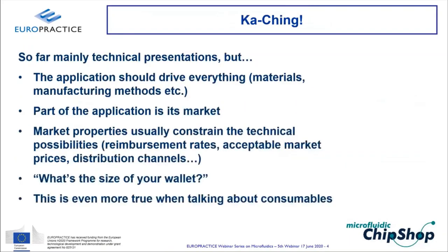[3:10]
So, catching up in this series of webinars, we mainly had presentations which were focusing a lot on technical aspects, and we all agreed that the application should actually drive everything. And that could be the materials, the manufacturing, etc. But of course, part of this application is its intended market. And these market properties typically constrain the technical solutions. So you have to take into account things like reimbursement rates, if we talk about diagnostic devices, acceptable market prices, the distribution channels. I will talk about this food chain later on.
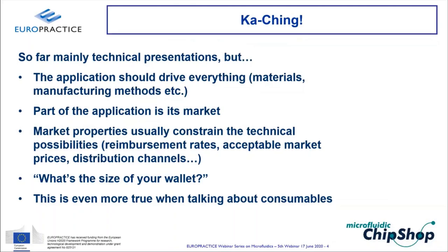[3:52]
So typically, when a customer comes to me and says, can you do this and this and that? I always respond with another question, what's the size of your wallet? Because obviously the technical solutions are constrained by market properties and the budget basically you have for a given part. And this of course becomes even more true when we talk about consumables, so devices which you use once and then have to throw away.
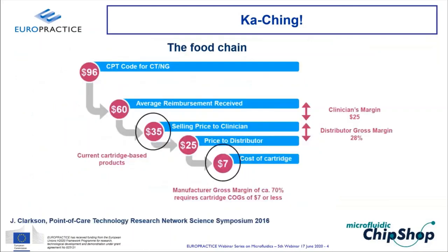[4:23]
This is what I mentioned with the food chain. This is actually a slide which I nicked from Jim Clarkson, the CEO of AGL in the UK, which shows you a little bit the kind of different price levels you see at different stages in this food chain. So on the top, you see the official US CPT code. So basically that's the value which in this case a body gives to a certain application. So it's listed and the official value, for example, for this diagnostic test is $96. However, of course, all the insurance companies negotiate prices with different clinical bodies, with different hospitals. So the average received reimbursement rate is much less than that. So in this case, it would be $60.
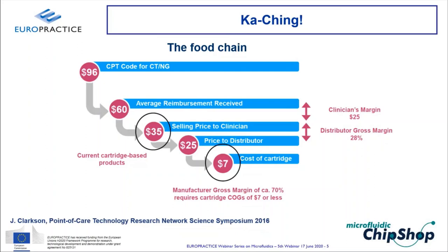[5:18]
The price, however, that the companies are selling this diagnostic kit to the hospitals, to the clinicians, is only 35. So there is, first of all, a clinician margin on it. In this case, some like $25, which sounds realistic. Then, of course, typically the companies don't really sell directly to the hospitals, but you have some kind of a distribution margin. And again, that's also typically somewhere of the order of, let's say, anywhere between 20 to
30%. And finally, the company who actually makes the cartridges, the actual manufacturing cost, is typically some like, in this case, $7. So we're talking about typically in the range of anywhere between 10 to, if you're lucky, 20% of the actual end user price. And this actually is what feeds the microfluidics companies. We're in this case actually at the bottom of this food chain.
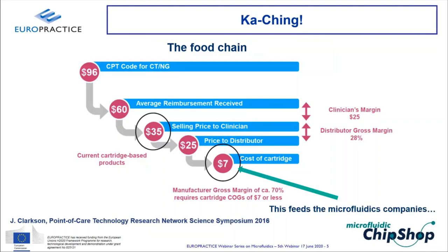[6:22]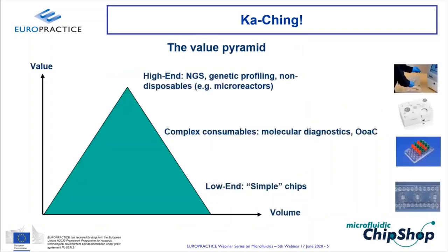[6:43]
And even if the selling price looks pretty high, the actual allowable cost for making a device can be pretty low. And as I said, a good rule of thumb is typically 10 to 20% of the actual sales price is the allowable so-called COGS, cost of goods sold. And that leads me to another concept here of the so-called value pyramid.
If you look at the relationship between the value of a given application and typically the volume, the number of chips or the number of cartridges sold, you typically see this pyramid. On the top of the pyramid, you have the high-end applications, the ones which have a very, very high value. And in the top right image, you see, for example, a cartridge from the US company NetBio, which basically does the complete genetic analysis from a swab to a genetic profile, which identifies certain loci, which directly feeds into an FBI database. So that's a forensic or
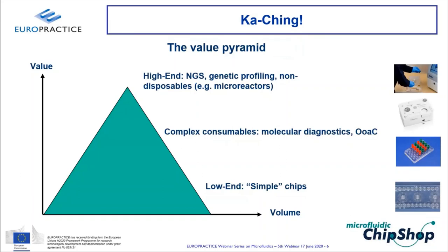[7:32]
a criminal investigation application, and there the value actually is about $1,000 per run. So in this case, if you take this 10 to 20% rule of thumb, if a cartridge costs $100 or even maybe $200, that would still be acceptable.
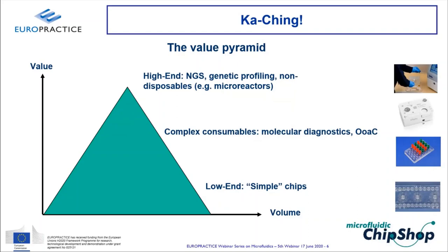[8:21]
Somewhere below that, you will find the more complex consumables like the cartridge you see here from BioCartis, a fully integrated molecular diagnostic cartridge, all reagents in there. Or the other example would be a classical titer plate organ on a chip device. They are fairly complex and therefore also fairly expensive to make. But the number of cartridges, the number of parts you can expect, is higher compared to the top end. And then, of course, the more you go down this pyramid, the less cost, the less value, the simpler the chips. But ideally, of course, the larger number of chips you can produce.
And the challenge I always give to especially startup companies is try to identify where you are on this value pyramid and, especially if you have a new technology, a new product, try to position yourself as high up on this value pyramid as possible. Because if you try with a new technology, which inherently is more expensive than something which has been optimized and in the market for 20 years, to enter a market on the low end of the value pyramid, this is really challenging. And we've seen quite a lot of failures of companies having not identified a good entry point into this value pyramid.
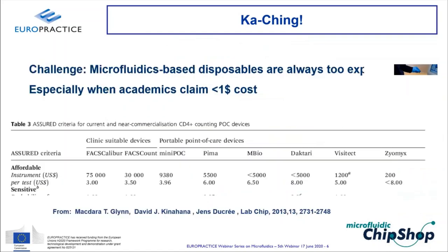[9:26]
And that leads me to the next point, the challenge. The perception is that microfluidics-based disposables are always too expensive. People always say, oh, why does it cost $5? We always thought it would be $1 a piece or so. There I have to do a bit of academic bashing. If you read a lot of papers, academics always claim, oh, we can make this thing for less than $1 a piece. And I will show you in some of the next slides why this is a really bad misconception.
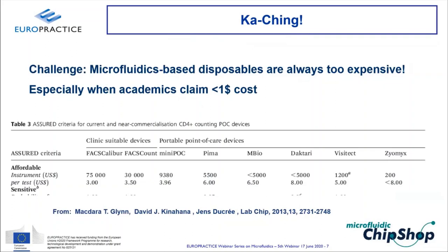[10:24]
I also have included here a table from one of Jens Ducrée's papers a couple of years ago, where they compare the cost, in this case for cell-based assays, basically a counting of CD4, which is for HIV testing, of conventional clinical cell sorters versus chip-based devices. And what you can see immediately is that, of course, the cost per test for these large clinical analyzers tends to be less than the cost per test of these cartridge-based solutions. And that's the typical conception in the market, that microfluidics-based solutions or disposables tend to be more expensive if you look at the individual cost per test.
If people do not take into account, A, of course, the cost of the instrument, and here you see a big, big difference between these big clinical analyzers and the cost of these point-of-care instruments, but also if you don't take into account all the other so-called costs of ownership, which basically means, of course, if you have these big complex instruments, you need a technician to run it, you typically have a servicing contract, you need a large space for that, et cetera, et cetera. So the big message here is, if you talk about cost with regards to microfluidics, always tell people they have to have a more holistic view onto cost and not just look onto the cost of the individual disposable.
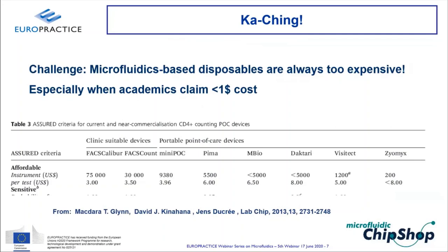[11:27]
And this leads me to my next chapter on cost and cost modeling. If we look at a fairly complex molecular diagnostic cartridge, like the one in this picture, you can actually see that it contains a lot of different components: plastic parts, reagents, valves, blisters, et cetera. So in this case, we're talking about 9 molded parts.
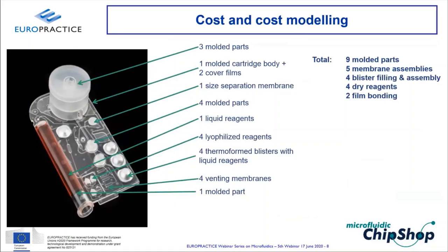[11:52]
It has a couple of valves, for example, at the sample cup. It contains quite a few membranes for venting and for bacteria collection. It contains blisters, which are filled with reagents. It contains dry reagents. It contains films to seal channels, et cetera. And so you can see that if you want to make something for very little money, which already contains 24 individual pieces, obviously it's not going to be a trivial thing.
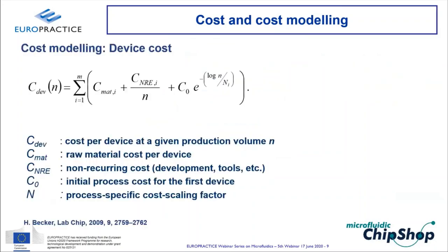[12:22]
And this leads me to cost modeling. The idea is, let's look into which factors are driving the cost of a device. And this formula looks fairly complex at first, but if you look at it carefully, it's actually not so complicated. It basically consists of 3 main terms. I hope you can see my mouse moving here.
The first term, and that is actually what academics typically quote when they say, oh, we can make this device for $1 a piece or 50 cents a piece, is the material cost. And obviously, even if your manufacturing were ideal and you had diminishing cost for manufacturing, of course, you can't make a device cheaper than the raw cost of the material. And that is one of the advantages of polymers, especially commodity polymers like polycarbonate, polystyrene, PMMA. There, the cost of the raw material is really low. We're talking about maybe $3, maybe $5 a kilo for these commodity polymers.
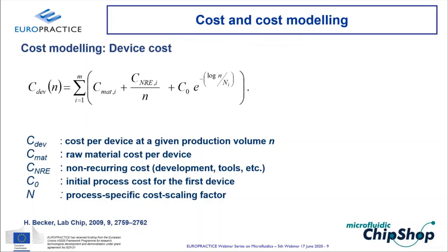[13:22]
The second term here is the so-called non-recurring expenses, so the one-time expenses you need for development, for tooling, et cetera. And obviously that cost per piece scales inversely proportional to the number of parts. So this one-time cost is distributed over more parts, and the lower the share of this cost part for the overall cost becomes.
And then, and that actually is the interesting term, is the last one here. And that is the so-called economy of scale. C0 is the cost for making the first part, and typically the manufacturing cost drops exponentially the more parts you make. And interestingly enough, you have this N here, the large N, that's the process-specific cost scaling factor. And the more effective your process is, of course, the quicker this exponential drops. And this is the big challenge in optimizing manufacturing: to maximize the factor big N here.
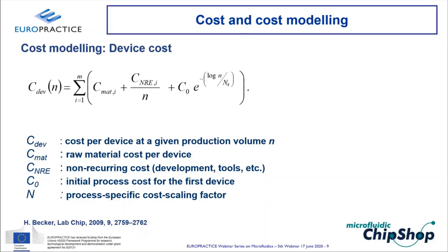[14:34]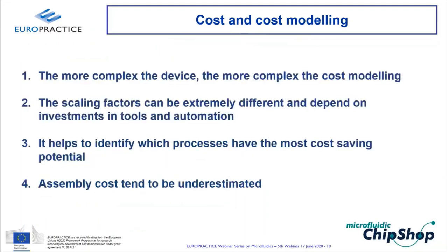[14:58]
And I've shown you, the cartridge before had 24 parts. So the overall cost for the device is, of course, a sum of this cost curve for all the 24 individual elements, because they typically have different material cost and different scaling factors. So it's really important to look a little bit closer into this cost modeling. And obviously, the more complex the device, the more complex this cost modeling becomes.
And especially the scaling factors can be extremely different depending on the process, in the sense that some processes like injection molding scale really well, others like assembly, for example, don't scale so well. And of course, it helps to identify which processes have the most cost-saving potential and the best scaling factor, and put your effort into what really scales best. And again, something we have learned: people tend to massively underestimate assembly cost.
And again, going back to my academic bashing, when they say we can make this thing for $1 a piece, they typically mean the material cost is $1. The clean room in the university comes for free. And also the time the PhD student needs to put everything together, in this case assembly cost, is typically not taken into account. And that's how they end up with these figures, which typically would not compare to a real full cost calculation, which you have to do in industry.
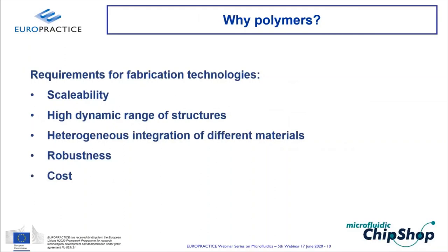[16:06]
Okay, now coming to the core of the talk on polymers.
Why would we want to use polymers? In general, of course, there are requirements for fabrication technologies regardless of the material. First of all, they should be scalable. You want to make a few parts, you want to prototype, and you want to scale up without a big change in manufacturing technologies. So you would like to have a technology which can make a few parts as well as millions.
The second one, and that's a factor which very often is overlooked, is you want manufacturing technologies which allow you to make a high dynamic range of structures. You would like to make a 50 micron channel besides a 300 micron reservoir, besides a 30 micron channel, besides a 3 millimeter high fluidic connector, stuff like that. The heterogeneous integration, hybrid integration of different materials, we have heard already in the previous talks, and I will also elucidate a little bit on that because this really is a pressing issue.
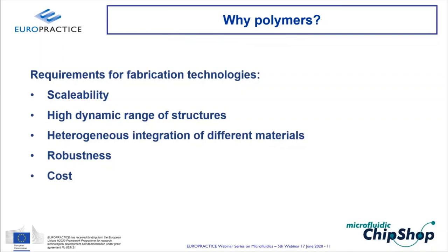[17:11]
Robustness in manufacturing: you want processes which have wide windows of process parameters in order to have a good yield. Because again, that's the second important factor which has an impact on manufacturing cost, is yield. How many good parts come out of the end of your production line compared to how many parts you actually make and you have to throw out because certain things don't work. So robustness in the manufacturing process is big, and cost, in the end, it all boils down to cost.
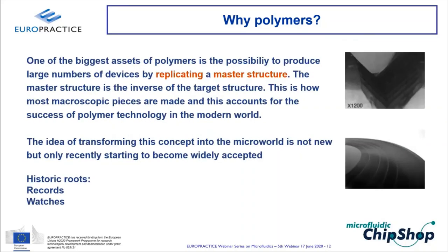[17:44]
The big advantage of polymers, of course, is the ability to make large numbers of devices by replicating a master structure, which is the geometrical inverse of the final target. And that, of course, is basically how most of your macroscopic parts of plastic are made in this world. You take a yogurt cup, you take a ball pen, you take the casing of your mobile phone, etc. These are all replicated polymer parts.
And of course, the idea of using that with microstructures is not something really new, but the adaptation became fairly quick. Historically, there are a couple of good examples. For those of you who are old enough to remember the good old vinyl record, that has been available for more than 100 years, and that is a replicated microstructure. You can see on the top right-hand side, the grooves on a vinyl record have micron structures on them, and people have been replicating them for 100 years.
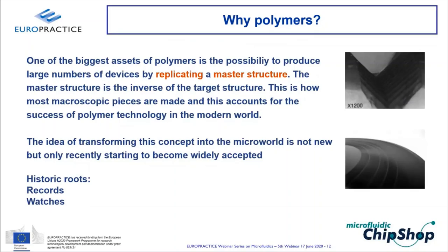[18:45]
This is one of my favorite slides, which I show all the time. This is what I call the technology chain for polymer microfabrication, and especially for microfluidic device manufacturing. Starting off with, obviously, the design. But again, from a commercial point of view, this is where you make or break the commercial success of your device, because that's where all the different inputs from the different fields come together. Application know-how, the physics of microfluidics, material science plays a big role, and design to manufacture.
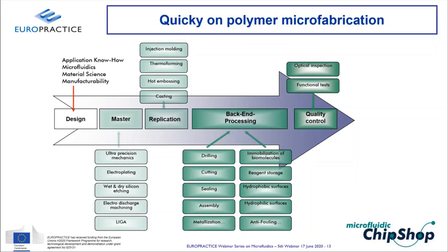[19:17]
Because we talk about polymer replication technologies at that point, you then have to make a master structure, and you can throw the whole range of microfabrication technologies at that question. And I have a slide with a little bit more on mastering. Then we talk about replication. So we replicate that master, and there are four main technologies to do that: injection molding, hot embossing, thermoforming, and casting. Again, I will go through all these different technologies in a second.
At that point, you have a microstructured polymer part, and to make a functioning microfluidic device out of it, you have to go through these backend processing steps, which here on the left column are the more physical steps, like dicing, drilling, sealing, so closing the channels, assembly, metallization in case of electrodes. And on the right hand side, you see all the more chemistry or biology, biochemistry related issues: the immobilization of biomolecules, the reagent storage, the tuning of surface energies, etc. And then in the end, quality control.
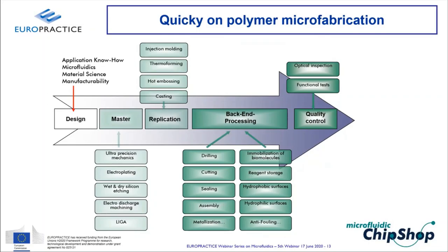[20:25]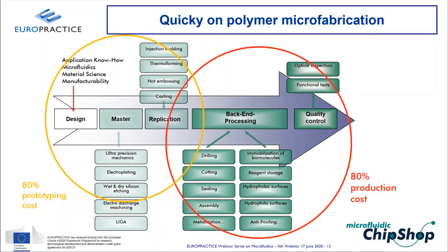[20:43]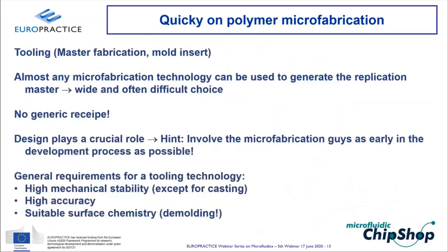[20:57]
What most people don't realize is that if you do prototyping or low volume manufacturing, 80% of the costs are in the front end here, because obviously, making a master structure or setting up the replication process can be fairly expensive. If you, however, scale up your production, you go to volume manufacturing, 80% of the production cost is in the back end. And this is something which you really have to take into account if you want to make a design for manufacturing. So let's look at the different steps along this chain.
So as I said, the first thing we need, if we talk about polymer replication, is a master structure. Often you find words like tooling or mold insert, which are used more or less synonymously here. And as I said, almost any microfabrication technology can be used to make that replication master, and picking the right one can be a fairly difficult choice, because there is no generic recipe. Again, my general advice is, if you think about structures, try to involve the fabrication people as early as possible in the process.
There are a couple of generic requirements for tooling. The first one is, with the exception of casting, you typically want a tool which has a high mechanical stability, also to give you many, many parts. Obviously, it has to have a high accuracy, because your part will never be more accurate than your master structure. And you would also like your master to have a suitable surface chemistry, so that if you want to separate your replicated part from the master, the sticking forces between part and tool are minimal, because the demolding process is typically the point in time when the structures are most likely to be damaged.
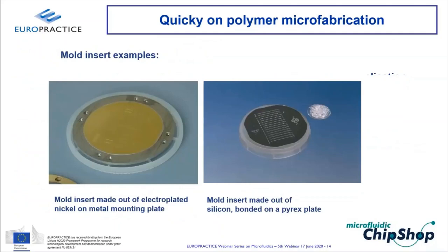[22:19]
A few examples. On the left hand side, you see a mold insert which is made out of electroplated nickel. You make that typically if you have a resist structure which you electroplate, or an etched silicon wafer which you can electroplate. So you end up with a metal tool. On the right hand side, in this case, a wet etched silicon part. You can actually use silicon wafers, especially for casting, as a replication master. Also for hot embossing, the challenge there is silicon is a fairly brittle material. So these master structures have the tendency to eventually break. And it's not a classical wear process, so statistically, if you have bad luck, it breaks in the second replication cycle.
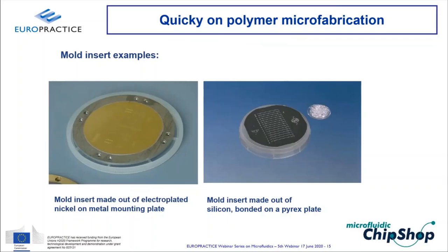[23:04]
This is an example of a mechanically machined mold insert, and this is actually the technology we use most often. The reason for that is the following. First of all, you can see here this dynamic range of feature sizes. You have some small channels, these ones here are, I think, 50 by 50 microns, something like that. And you have large reservoir structures. And of course, the nice thing, you can see this here in these ramps, you can basically make more or less freeform structures.
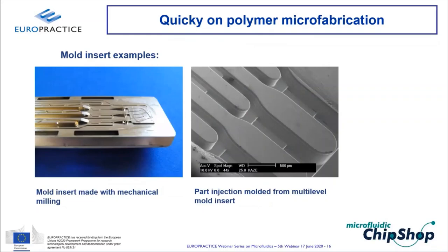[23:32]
I won't go into detail in this table, because it's a fairly busy one, but it shows you the different technologies available for making master structures versus the various parameters. We find that mechanical micromachining offers the biggest advantage. The limitation is the radius of curvature of intersecting features. If you need that curvature to be smaller than, say, 20 micron, you have to use any of these lithographical technologies, either in silicon or in a photoresist, and do a subsequent electroplating.
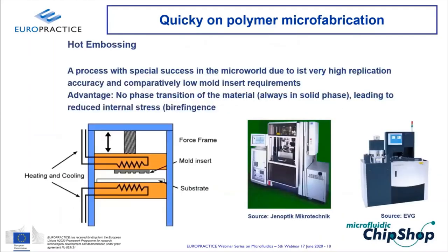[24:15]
Let's talk about the actual replication steps. Historically, for microfluidics, the first one used for thermoplastic polymers was hot embossing. In one of my earlier lives, I used to sell these machines you see here in the middle. The big success of this technology basically came from the fact that it has a very, very high replication accuracy. I'll show you a couple of nanostructures. Nowadays, it's also called nano imprint lithography in the nano world, as an alternative to EUV for making nanostructures. The reason for this very high replication accuracy mainly comes from the fact that the material does not undergo a phase transition in the process. You start with a polymer wafer and you're always in the solid phase, which generates a fairly low internal stress, low birefringence, and a very high replication accuracy.
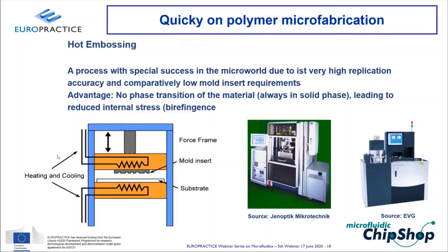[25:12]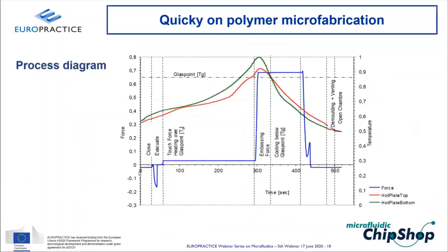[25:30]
A typical example of a hot embossing system schematic you see on the left-hand side. What you have is basically a force frame. You have an upper and a lower boss, which can be heated and cooled. You have your substrate on one side and your master structure, the mold insert, on the other one. And if you look through, that's a real process diagram. What you see here is the blue curve, which is the force, and the red and green curves are the temperatures of the top and the bottom, where the substrate and the mold insert are. What you basically do is start to heat up your upper and lower plate until you reach the glass transition temperature of the polymer, so the polymer becomes soft, and you then apply the embossing force.
You more or less immediately start to cool down once the force is applied, so the polymer starts to become rigid again. You hold the force for a certain amount of time, and then you basically demold. If you go to really small structures, you have to do everything in vacuum, so this happens in a vacuum.
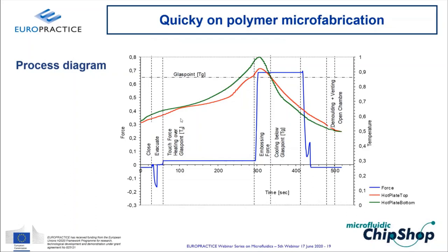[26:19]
What you can see on the one hand side here is the advantage of hot embossing. It's a fairly simple process in the sense that you basically have three or four parameters to play with: temperature, the force, the time, and that's about it. The drawback you also see here, if you look at the time axis, is the cycle time. In hot embossing it is typically anywhere between 5 and 10 minutes, which in an academic setting you don't care about. But for high throughput, that might become a limitation.
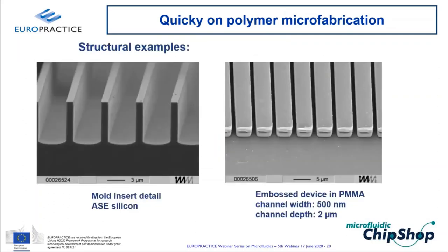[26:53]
These are a couple of examples of this very high replication accuracy. These were structures which were replicated from a dry etched silicon master structure. These ridges here are 500 nanometers wide. That's the replicated structure, and you can see how well these structures replicate. You just see a little bit of deformation in the nanometer range here at the top, at the front end of these things. But that's really an impressive example of how good the replication accuracy in hot embossing can be.
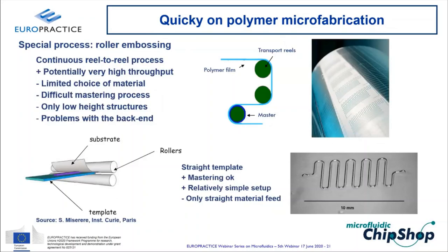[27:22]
Now there are a few process variants, especially if you look into reel-to-reel continuous processing, where you have a polymer film which runs over these reels, and you have a master structure on a drum, like the one shown here. This technology has the advantage that potentially it has a really, really high throughput. I mean, 3M has been making these reflective films, which you see on street signs, for example, which have reflective nanostructures on them, by square miles. If you've ever been to a printing station of a newspaper, these machines create a huge amount of surface area in a very short amount of time.
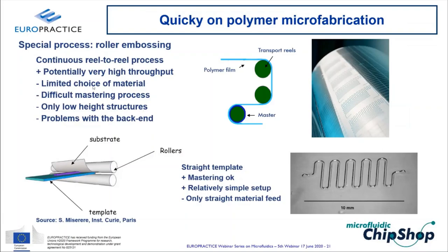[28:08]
Drawbacks are that there might be a limited choice of materials. So the question is, what polymer film can you get in suitable formats for this material? And of course, the mastering can be a bit of a challenge because it has to be on a drum. People typically use a thin nickel film, which they laser engrave or etch.
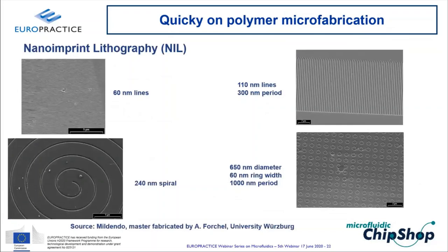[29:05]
But there is another fundamental limitation, and that is it allows you only comparatively low height structures, because if something sticks out here, then of course the trajectory of the top part of the structure in one revolution would be longer than the trajectory on the bottom of the structure. So you introduce quite a lot of differential stress the higher you go. The other challenge, of course, is that all the backend processing steps would have to be compatible with this reel-to-reel methodology as well. And as I said, here are just a few examples of nanostructures we made almost 20 years ago.
You can see, I mean, these donuts here, for example, they have a width of 60 nanometers and the donut itself is like 650 nanometers in diameter. And the process development here took something like half an afternoon. So that's a real advantage of hot embossing.
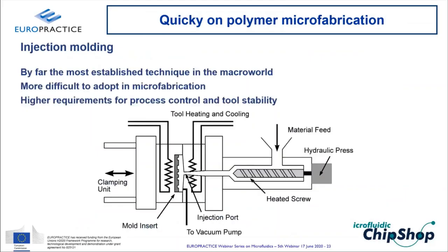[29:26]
If we talk about industrial manufacturing, currently, I would say most of the commercially available disposable devices are made with injection molding because that is the most established technology in the macro world. It is a bit more difficult to adopt in microfabrication because the number of process parameters is higher and you need fairly high requirements with regards to process control and tool stability.
The process is you feed granular polymer material in this feed here. It drops into the so-called screw area, which is heated, and the polymer melts as it travels along the screw. It's then injected with a high pressure, typically something like 1500 bars, into this cavity. This cavity is formed by the so-called injection molding tool, which typically consists of so-called platens. You have a fixed platen, which is this part here, and a moving platen, which opens and closes. And here on the inside, you have your mold insert, and this will form the part.
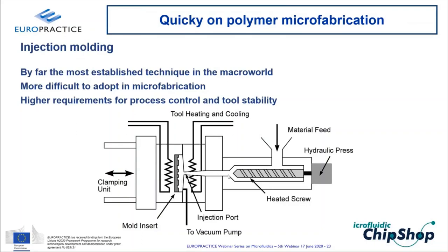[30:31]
It's important to notice that, of course, you will always have polymer in here. This is the so-called sprue, and this is the gate. These are two important words you have to learn if you talk about injection molding.
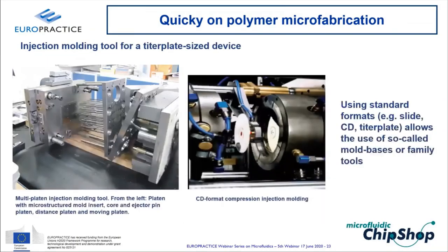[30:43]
These are two examples of injection molding tools or machines. And you see, of course, this is a fairly complex piece of precision machined metal. This is a tool for parts the size of a titer plate, and this weighs about 600 kilos, and you can see lots of different mechanical parts. So this can be fairly expensive. A typical cost for a production tool for a part that size is easily 100,000 euros.
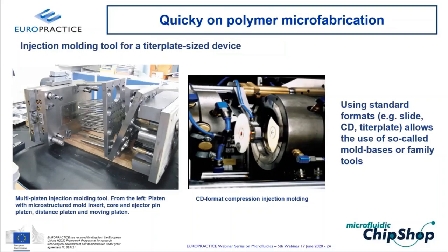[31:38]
So that's where the typical prejudice comes from, that injection molding is only good for high volume production and it's very expensive. The trick, however, is of course standardization. So if you stick to standard formats like a titer plate or a microscopy slide or a CD here, you can of course reuse this tool as a so-called mold base or family tool and run different designs, different parts on one tool by only replacing this inner mold insert. And that way, injection molding actually becomes price-wise compatible with most prototyping technologies, which I will also talk about a little bit later on. We typically say if you want to have 100 parts or more, injection molding becomes price-wise compatible if you stick to standard formats. That's the limitation.
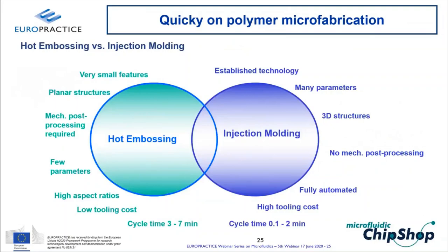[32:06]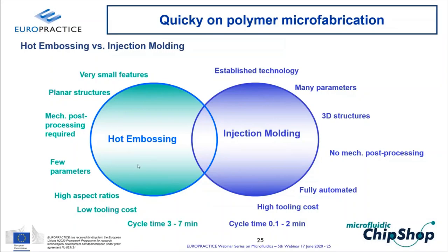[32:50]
minutes would be typical. With injection molding, it's an established technology. The process development typically takes longer because you have many parameters to optimize, but you get finished 3D parts, which do not need mechanical post-processing. Holes are not a problem, and the parts come out in their final shape, so no mechanical post-processing. Can be fully automated, but it can have, if you don't use a family tool, high initial tooling cost. Cycle time typically can be anywhere from, say, 10 seconds to maybe 2 minutes. In most cases, let's say no more than a minute a piece.
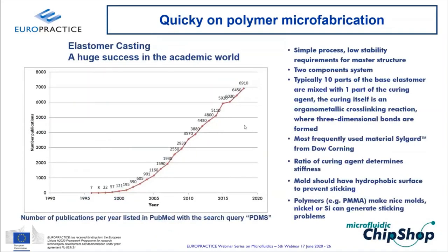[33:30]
The next one, which I only want to go over shortly, is elastomer casting, which of course is a huge success in the academic world, thanks to George Whitesides, who proposed that sometime in the mid-1990s. The reason why it's such a huge success in the academic world is it's a very simple process. I mean, you actually wouldn't even need a clean room for that. What you typically have is a two-component system where you have a base elastomer and a curing agent. You mix them, you pour them on top of the master structure, you cure it overnight or in an oven for a couple of hours, you peel it off and off you go. And of course, PDMS is the most widely used material, which comes under the trade name of Sylgard.
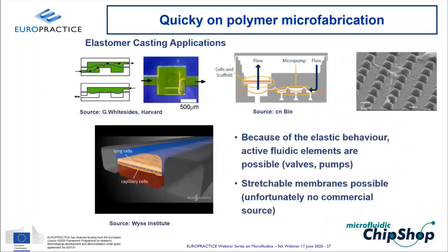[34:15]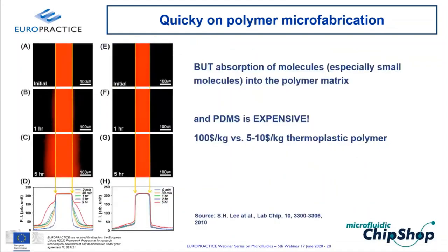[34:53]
Because of its elastic behavior, you can actually incorporate active fluidic elements like valves or pumps or these, let's see if the movie works, stretchable membranes for organ on a chip applications. However, unfortunately, I have not, for example, found any source of membranes in PDMS or any other silicone elastomer which would be thinner than, say, 100 micron. And very often you would like to have something thinner. So people always make the membranes themselves by spin coating, for example. But, and there are two big buts, that's why I always urge people, if they think about commercializing their devices, not to use PDMS.
The first one you can see here in these fluorescent images is PDMS absorbs small molecules. PDMS basically is a sponge. And what you can see here, this is basically a channel filled with rhodamine. And over the course of a few hours, you can see how much of that dye is diffusing into the surrounding polymer material. The second one is, and that's something I would really like to counter, the common perception that PDMS is cheap. It's not. PDMS is really expensive. PDMS is about $100 a kilo versus $5 to $10 for most of the thermoplastic polymers, and not even talking about glass. So PDMS is an expensive material and the processing is expensive. So if you think about commercializing your device, please don't use PDMS. And don't use PDMS for prototypes.
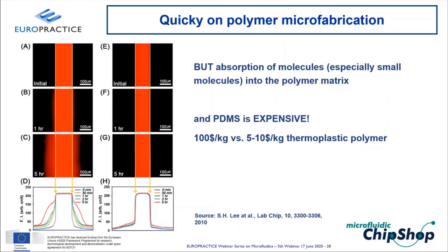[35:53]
Final replication method is microthermoforming. You all know that basically from yogurt cups, for example. These are typically made with that. So they are used in the macro world for thin-walled packages or a Coke bottle, for example. It's a fairly low-cost method, but also a comparatively low-precision one, which creates a lot of internal stress, because what
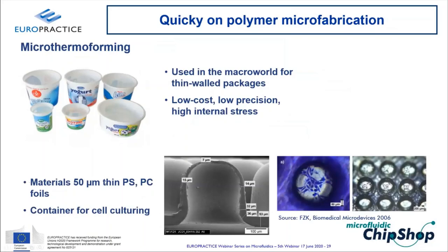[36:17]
you do is you have a thin film. And you can see an SEM picture here from these cell containers. You start with a thin film and then you push either with overpressure on that side or vacuum on the other side. You basically push that film into its desired shape. And what you can see here is you pull out the material. So out of these 50 micron on the top of these cell cages, you have some 7 micron left.
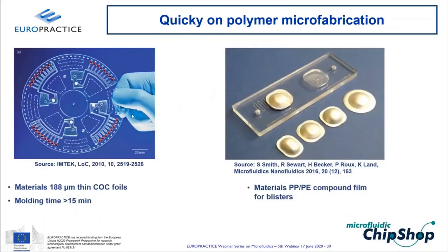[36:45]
A few more examples here. That's from IMTEK in Freiburg. They thermoform these disks for molecular diagnostics. The reason here is, of course, you can do that with a comparatively thin film, so you have a good heat transport through the material in case of PCR. But their molding time, at least with their existing setup, was comparatively long.
What we are using thermoforming for actually is to make blisters. The reason is, this is a process which does not really need micron precision, because blisters are macroscopic parts. And in this case, actually, you can make blisters in a few seconds. So the thermoforming process is really fast.
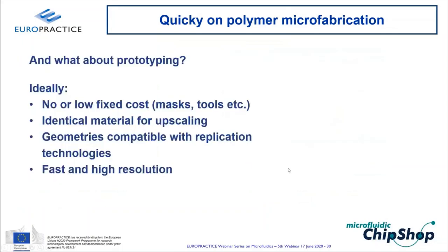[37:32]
So we've talked about now the replication processes. The question is, what about prototyping? The ideal prototyping technology, of course, does not have any initial fixed costs for masks and tools. It would use the same material as later on for high volume production. It allows you to make geometries which are compatible with replication technology, so the results you obtain from a prototype can be used directly for volume production. And of course, it's fast and it gives you high resolution parts.
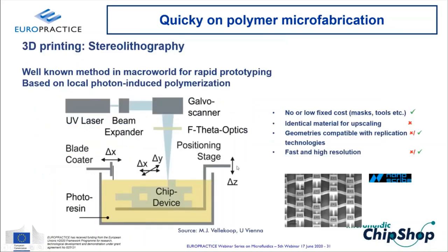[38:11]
When people talk about prototyping, everybody now, of course, talks about 3D printing. There are basically two ways of 3D printing. The one which is most widely used in microfluidics is stereolithography, where you have a light source and you focus your light beam into a tank or a bath of a photoresin, so a photocurable polymer, which cross-links under the exposure to photons. And this way you basically build up a device by writing one layer, you push up that stage, you write the next layer, and so on. So you build up a device layer by layer.
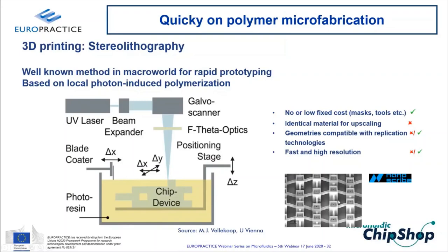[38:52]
That's an example of a high-end solution from the company Nanoscribe in Karlsruhe. Really great machines, enormous resolution. It can really make sub-micron features. Maybe you can just see the scale bar here. So these towers are less than 20 micron across, and these little walls here are probably 2 micron wide or so. So very, very high resolution, very nice. So it fulfills certainly this no or low fixed cost criterion.
The biggest challenge for stereolithography is the materials, because obviously it's not a material which you would use for volume production technologies. It's getting better, but most of the materials you use in stereolithography are still fairly cytotoxic, not biocompatible, and they fluoresce like hell. Because, I mean, you need photoactive centers and you typically don't polymerize every single monomer in the solution. So you typically have a fairly high fluorescent background.
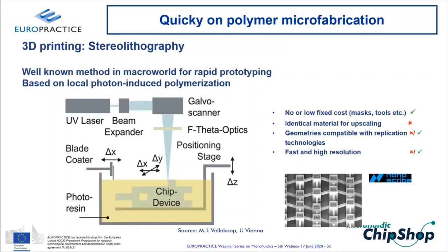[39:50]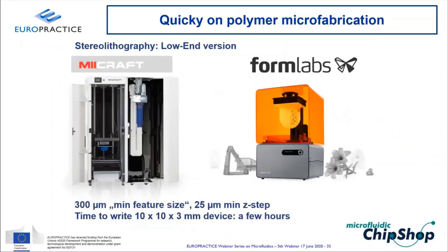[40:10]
The geometries tend to be compatible with replication technologies if you keep that in mind when you design the part. For fast and high resolution, I put both a cross and a checkbox here, because typically it goes against each other. The higher the resolution, the longer it takes to make the parts. And if we look at the more low-end versions versus the 100,000 euro plus machines from Nanoscribe, these are the ones you would find in quite a lot of microfluidics labs, the MiiCraft or the Formlabs devices. They typically have printing times of a few hours per centimeter-size device.
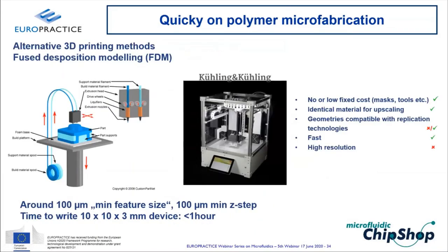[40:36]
The alternative 3D printing method is fused deposition modeling, where you have a thread, or a filament, of material, which you push through a heated nozzle. So you extrude the filament onto a stage. This has the advantage that you actually use a classical thermoplastic polymer. You can actually nowadays even get COC for these thread materials. The drawback in this case mainly is the geometrical resolution.
Nominally, these 3D printers, at least the ones that are a little bit more expensive than the $300 DIY devices, have a nominal resolution of about 100 micron, but if you tell them to print a 100 micron channel, it's typically 100 micron plus minus 20 or so. You typically see the layering, and it's not very, very well defined.
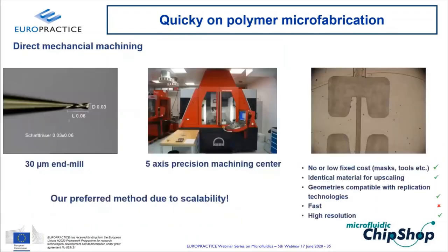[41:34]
The next prototyping method, and that's actually the one which we use most, or which is our preferred method, is direct mechanical machining using mechanical milling. And you see here an example of a 30 micron end mill. So this thing really has a diameter of 30 micron.
The big advantage here is actually its precision. You can see here an example. This is a passive butterfly valve, a capillary stop valve. This here is a 50 micron channel. This is a 100 micron channel. And you can see, I mean, this really does 50 micron plus minus one or so with regard to precision. So it fulfills most of these criteria.
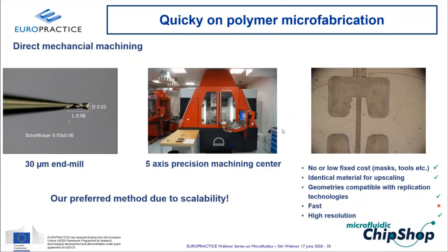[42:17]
The drawback is if you have a fairly complex device, it can actually take a day or two on these milling machines to really process it. So it's not just, you know, a few minutes or an hour or something like that. That's the limitation. But other than that, it fulfills all the other criteria, and especially it fulfills the material criteria. You can basically machine in the same materials as you would do later on in the molded parts. And it typically creates geometries which are really directly compatible with replication technologies.
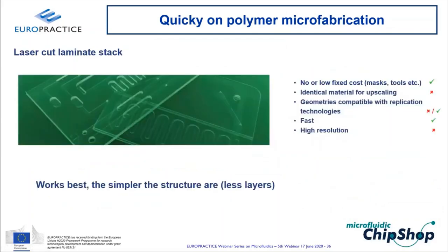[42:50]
Finally, a laser cut laminate stack is one of the prototyping technologies. That works best the simpler the structures are, so you have fewer layers. So what you basically have is a sheet out of, say, PMMA coated with a polymer, with an adhesive on one side. You laser cut it, and then you add one stack on top of each other until you get the final structure.
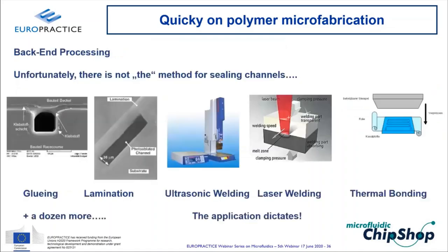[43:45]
The biggest advantage here is that that tends to be a very fast method, because the laser cutting takes a very, very short time. It has some limitations with regard to resolution. So making channels which are smaller than, say, 100 micron or maybe 150 micron becomes a little bit of a challenge. And of course, you typically then in the end have this stack of polymer adhesive, polymer adhesive, polymer adhesive. So the post-processing and the material are a bit of a challenge here.
Once we have structured the parts, we of course have to go through these back-end processing steps. And one of them, of course, is how to seal these polymer channels. And unfortunately, there is not the method for sealing channels, but there are dozens of methods. Gluing, you know, with adhesives, of course, is one thing, but what can go wrong is shown in this picture, which I like a lot, because I'd rather like to show things which can go wrong.
In this case, there's just too much glue here, so the glue runs into the channel, deforms the channel cross-section a little bit. You have some runoff down here, so you get uneven surface chemistry along these ones. So if you want to glue, make sure that you only need a little, or you can dispense very little, and you can do that with transfer methods, for example.
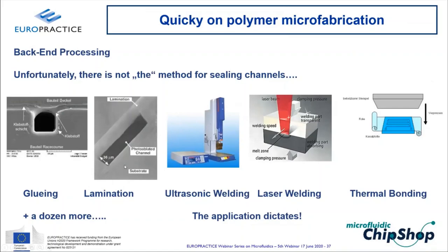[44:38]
Lamination is another technology where you basically have a tape which is already pre-coated with glue, and that typically tends to be a little bit less messy. So the danger of glue running into the channel is less, but you then have one channel wall which is glue, and the other ones is not. So for optical methods, for example, that might have limitations. Ultrasonic welding is possible, laser welding, thermal bonding, plus, as I said, at least another dozen more technologies to do that. And it's important, again, the application should dictate which technology you're using.
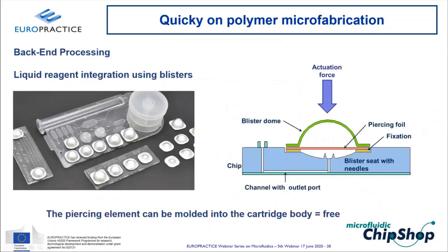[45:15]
The other one I would briefly like to mention is the integration of liquid reagents, especially using blisters, because the big challenge in blisters is you have to get the reagent out of it. So you have to burst the blister. And the way it's typically done is that you have some piercing structures, some needles. So you lower the blister onto these piercing structures, the needle pierces the bottom film, and then the liquid can run out in a very controlled manner.
And the nice thing about replication technologies, especially, of course, injection molding, is that these needles come for free. They are part of the molded cartridge body. There is no assembly. They just come for free.
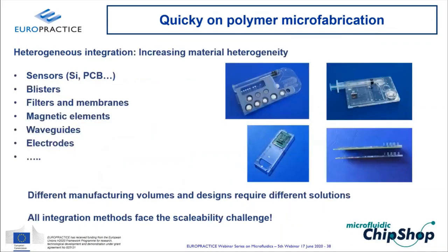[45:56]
We heard already in the previous presentations a lot about heterogeneous integration or hybrid integration, and indeed that's something we see in a lot of projects popping up, that the more complex the cartridges become, there is increased material heterogeneity. Just a few examples on the right-hand side.
So you might want to integrate sensors like this one, that's a GMR sensor for cytometry, or this one here, a nano electrode sensor. You want to include the blisters, which obviously are different materials. Filters or membranes, like the one you see here, magnetic elements, you can just barely make it out here. This is something to steer magnetic particles. You might have waveguides, you might have electrodes, you might have these printed circuit boards.
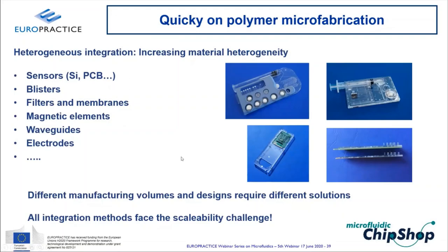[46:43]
And the challenge here is that different manufacturing volumes and designs require different manufacturing solutions, but all these methods face the challenge of scalability. So again, try to select materials which allow you to make prototypes as well as high volume things. And I will quickly talk about a few of these hybrid integration methods.
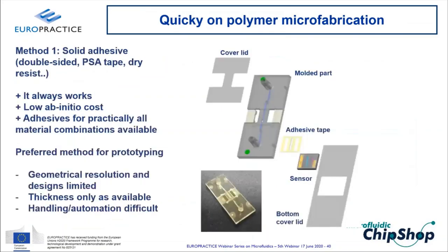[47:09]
The first method, which is basically what everybody is using for prototyping, is the use of a solid adhesive. That can be a double-sided adhesive tape, can be pressure-sensitive adhesive, can be a dry resist. So you have the part with your microfluidic structure, you have your sensor, for example, which you would like to use. And then you have, as I said, either a PSA, an adhesive tape, double-sided adhesive tape, can be dry resist on the sensor, and you basically glue them together.
The big advantage, and that's of course why everybody is using that, or most people using that for prototyping, it basically always works. You find a good material combination and adhesive for almost anything. It also has low initial cost because you don't need special tools for that. But there are a couple of limitations. One thing is, of course, the geometrical resolution.
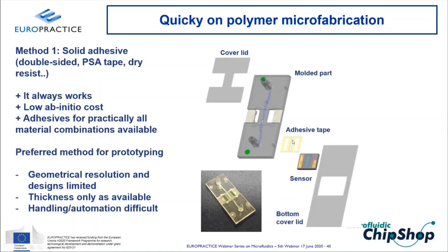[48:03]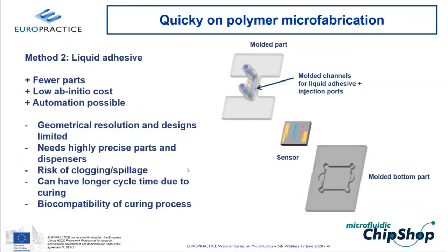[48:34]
If you, let's say, laser cut an adhesive tape, making channels which are smaller than 100 micron is a challenge, and having very sharp edges is a challenge. Assembly of this fairly feeble thing can be a challenge. It comes only in fixed thicknesses unless you use a dry resist, which has other challenges. And of course, again, the scalability can be a challenge because the automation of handling these very feeble tapes can be a challenge. Second method is liquid adhesive.
In this case, you basically create a second channel around your initial channel, which you then fill with your liquid adhesive. Again, the nice thing is this has fewer parts because it's only the top part and the bottom part and the sensor in between. This can be automated by dispensing the liquid adhesive into this channel with an automated pipetting robot or so. But it also has the drawback that it has limited resolution and design restraints. And you need very high precise parts and high precise dispensers because, of course, there's always the risk of you dispense too much, it spills, it clogs the initial structure.
You have to cure your adhesive, your liquid adhesive, either with UV light or with temperature, which in both cases might be a challenge if you have biomolecules here on the sensor which don't like UV light or high temperature.
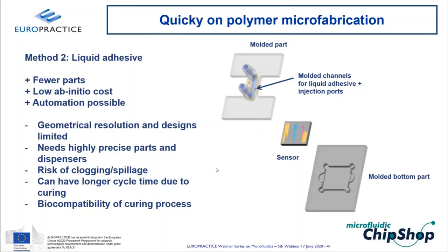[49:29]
The third one, and again, a lot of people are using that, is just an elastomeric gasket. So you have your fluidic channels here, your sensor, and you basically just put a gasket out of PDMS or another rubber in between, which is fairly robust and it actually works. It helps, you know, if these parts are a little bit warped, it helps to alleviate some of these imprecision problems, and it can compensate for temperature. But again, geometrical resolution limits and, you know, to actually manufacture this thin gasket can be a challenge in itself. Plus, you also have to somehow put these parts together, and very often that needs an external mechanical fixture.
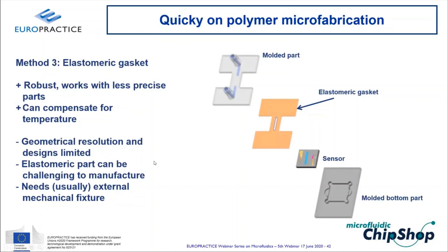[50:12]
The coolest one, which if it would work all the time, would be direct bonding. So you basically surface activate your sensor and your molded part and just stick them together. Very simple process, very few parts, which would be the preferred method, but has a lot of buts. It typically only works with surfaces which you can actually activate. So in case of silicon, you need a silicon oxide surface and a matching chemistry on the molded part.
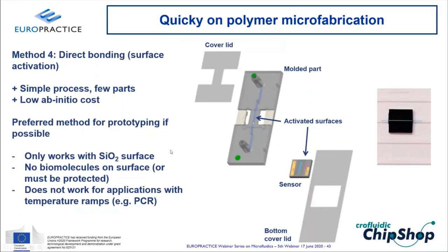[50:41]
And unfortunately, the activation would destroy any of the biofunctionality on the surface. So it doesn't work if you have biomolecules on the surface, or you have to mask them, which again is driving the cost. And the biggest limitation, it does not work for applications with temperature ramps because of the difference in thermal expansion coefficients.
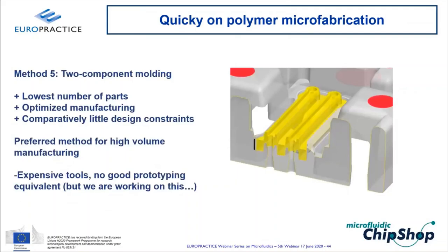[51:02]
Final method, and that of course is the gold standard for high volume production, is two-component molding. So in this case, you basically mold whatever kind of gasketing structure you have with a second component directly into the molded part.
Ideal because it's the lowest number of parts, it's optimized for manufacturing, it has comparatively little design constraints, so you can make these structures pretty small. Big drawback is very expensive tools, and there's no good prototyping equivalent for that. We're working on that, but you have to jump into shelling out a lot of money for the tool. But it's clearly the preferred method for high volume production, because also the assembly is simple.
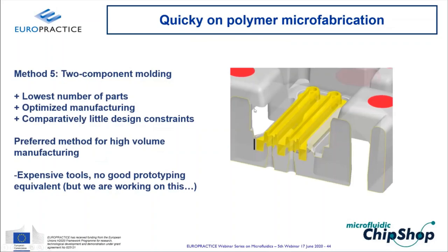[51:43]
You can see that here in this hook structure, you just basically clip in whatever sensor you have. That's it. No adhesive, no chemistry, just mechanical clamping.
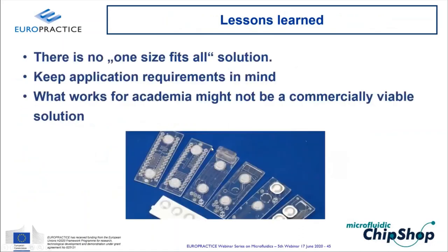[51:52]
Okay, lessons learned. The first thing is there's no one size fits all solution. It's really the application should drive your technical solution also in this field. And what works in academia might clearly not be a commercially viable solution.
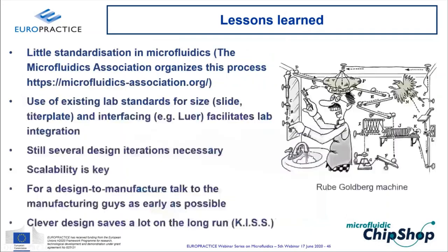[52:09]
You've seen that there's little standardization. So this is my 30-second pitch for the Microfluidics Association, which is organizing this standardization process, and have a look at the website here. Try to look around what's out there in the labs with regards to existing standards like size, you know, a microscopy slide or a titer plate or interfaces.
Expect still several design iterations to be necessary. Especially if you have a complex device, expect that the first design will not work perfectly. It will work, but not perfectly.
Always keep scalability in mind when you select your manufacturing technology. It's really important to be able to scale up, ideally seamlessly, from prototyping to high volume. And for this, as I said, we use injection molding with standardized form factors, with standardized outer dimensions, as a way to really make parts from 100 pieces upward.
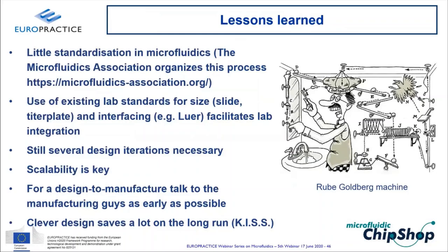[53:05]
Try to talk to manufacturing people as early as possible in your product development process to actually get a design to manufacture, because that design makes or breaks your commercial success. If you don't do a design to manufacture, you get a device which works, but it will be a factor of three too expensive. And try to avoid what is shown on the right-hand side.
Try to avoid over-engineering. This is something we see lots and lots of times. People come up with over-specified devices. On the other hand, a clever design can really save a lot of money in the long run, and I'm a firm believer of the KISS principle. And if you don't know what that means, just Google it.
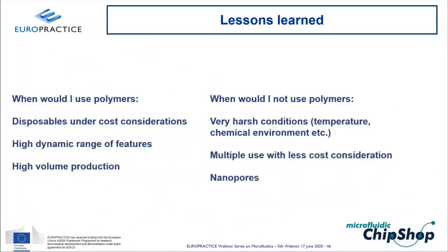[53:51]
So we had that question coming up in the previous talks all the time. When do you use polymers or not? When would I use polymers? Clearly, if I have disposables which are under any kind of cost consideration, because it's more or less the only way to really make low-cost devices.
The second one is if your device has a high dynamic range of feature sizes, because there is basically no other way how to make 50 micron structures besides hundreds of micron structures besides millimeter structures. And of course, if you really go to high volume production, then the replication methods really have a very good economy of scale.
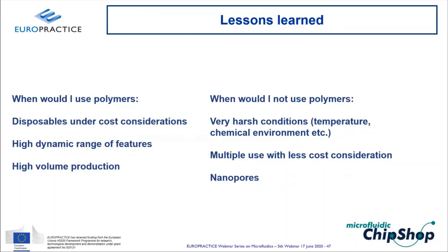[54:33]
When would I not use polymers? First of all, if I have harsh conditions, like temperatures, for example, if I want to build an analytical device which goes down into a borehole for the oil industry, polymers might not be the best solution. Or if you talk about chemical synthesis with high organic solvent concentrations.
Also, if you have a device which is not a disposable, so which can be used often, like a microreactor, which then also falls under less cost constraints, you might look into alternative materials. And finally, if you have a technology which requires nanopores, there are technologies to make micro holes in polymers, but I have not found a way to make nanopores, nanoholes in polymer materials. In this case, you're still limited to silicon or silicon nitride.
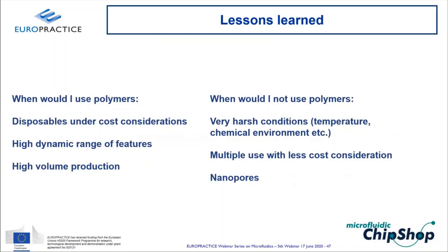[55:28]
Okay, with this, I'm basically at the end of my presentation. I hope I have given you a feeling of which considerations should drive the selection of materials and manufacturing methods. And unfortunately, in this world, it really basically is cost and money which drives this decision, coming from being an intimate part of the application. The application drives everything, but the application often is just constrained by cost.
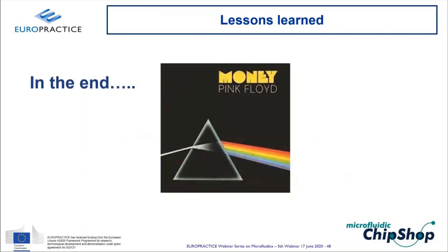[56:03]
Thank you very much, Kurt, for this interesting presentation and enthusiastic talk. And as an engineer, indeed, we sometimes wrongly think that the world needs mainly technical solutions, but obviously there's more to it, and reminding us of the business aspects of product development was quite refreshing, that it's not only about technology. So now we are ready for the question session.
Thank you for already answering one of them, so I can skip one. But nevertheless, there is one other general question I always ask: could you share your vision on what the main bottlenecks are to be solved for further growth of microfluidic devices and more market introductions?
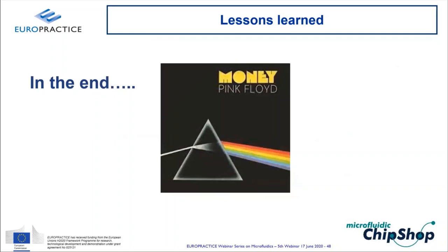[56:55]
I think, and that's actually an indication of how much this field has matured, that I don't think there are big hurdles or big bottlenecks or big stumbling blocks. Nowadays, it's typically bits and pieces. For example, how to make cheap, high resolution electrodes which would not need lithography or a vacuum process. So I think there are lots of smaller technological constraints which might have to be solved to drive the growth. But overall, I think we are in an exponential growth period.
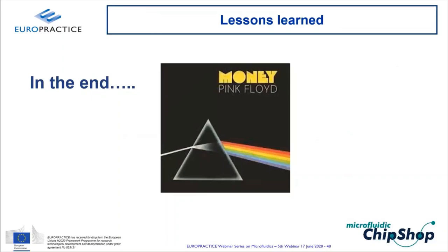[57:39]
Wherever we look, the number of parts we produce goes up really exponentially in all our applications. The acceptance in the public, and of course, COVID-19 testing is one of the examples which suddenly brings this into the public eye. As I said, I think we are past the fundamental stumbling blocks.
Okay, so actually what I hear is that also here it's mainly about further cost reductions and maybe process simplifications. Is that a fair summary? I showed this value pyramid. Of course, in the beginning, a lot of the applications were at the top of the pyramid where it really makes sense. And if you want to expand the market, you have to trickle down this pyramid. You have to go to these lower value applications. And for this, yes, cost considerations and cost optimized processes will be the key.
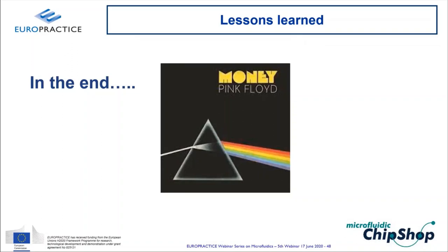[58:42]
Okay, clear. Then if I may refer to the ASICs industry, where there are actually only a limited amount of fabs, but many application companies, do you also see the same trends in the microfluidic business? So will we go to more OEM companies having in-house production, or will we have consolidation of manufacturing partners? That's a good question because obviously we're some 50 years behind the microelectronics industry.
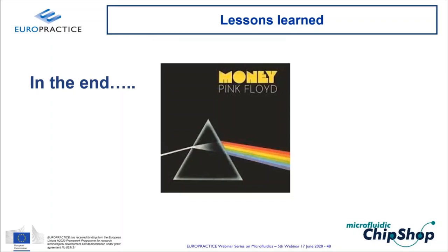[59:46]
And what we see as a difference, a lot of people try to compare microelectronics to microfluidics. I think we see a much more differentiated application case. And in this case, that would, in my opinion, also lead to an ecosystem with a higher biodiversity, in the sense that we will see many more business models. We see, for example, in the large diagnostic industry, both cases: companies producing in-house as well as outsourcing of production. We see that a lot of the application companies indeed don't want to be bothered with manufacturing, or actually don't really have the engineering skill. So they basically outsource the manufacturing and want to receive a fully packaged device, which they just have to distribute, or where they might have to add a little bit more of their biochemistry know-how. But at least I would say for the next 5 to 10 years, we will see a very diverse ecosystem here.
Yeah, okay, thanks for your view on this. And indeed, it's probably not so straightforward to have a one-to-one copy of the ASICs industry. So now there are also a few more purely technical questions. One is, how is the nickel insert mold attached to the mounting plates?
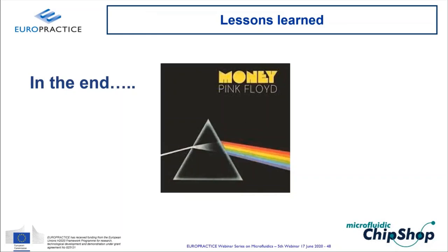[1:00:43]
Yeah, for this, we typically make comparatively thick nickel, say 2 millimeters, 3 millimeters, and then it's mounted onto a tool with mechanical screws. Yeah, clear. Then could you also comment a little on blister filling? Blister filling is basically done with any of these commercially available pipetting robots.
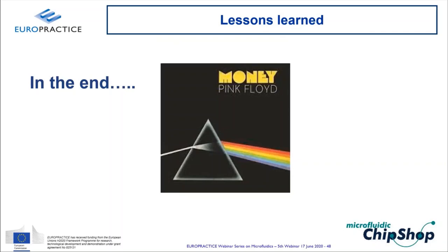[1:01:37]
The challenge is that a blister, let's say you thermoform this blister dome, which has a nominal volume of 100 microliters. You dispense 100 microliters in it, and then because of the surface tension and the hydrophobic nature of the blister material, it forms a meniscus. So either if you then seal the blister, you push out the liquid and you run into the danger of incomplete blister sealing because the surface is suddenly wetted with your reagent, or you underfill and then you have a little bit of air in the blister. So it can be a tricky process.
And again, it depends on whether you can live with 1 or 2% air in the blister. Or do you have a reagent which would react with oxygen, so you have to do everything under a nitrogen atmosphere?
Or you say, we can't have any kind of gas in there, so we have to actually do a compression step after the filling. So again, there are different technical solutions depending on how much money you would like to invest. Yeah, so also here, not one single solution, but the blister itself, could you consider that as a component of the microfluidic device or are there other components?
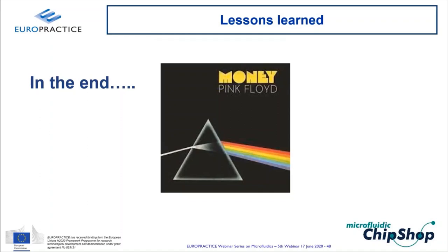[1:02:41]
I always tell people, don't look at a blister as an isolated component, but it's always a part of the overall design, because the force, for example, you need to operate a blister depends on the blister dimensions, on the piercing mechanism. Do I have one needle? Do I have three needles? How sharp are these needles? But also on the microfluidic system. What's the hydrodynamic resistance of the microchannel structure? So you can't really look at a blister as an isolated component. It's always part of a system. Yeah, okay, indeed. Clear answer.
And then maybe one last question. What is the usual surface roughness of the different technologies and what is preferred or what is needed?
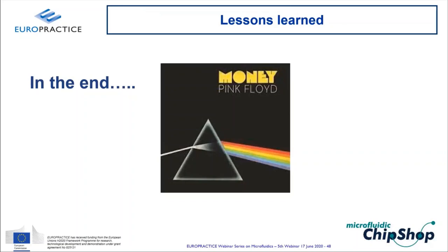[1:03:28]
If we do injection molding and we polish the mold insert, we have RMS roughnesses easily of lambda 10th, so say 40 nanometers. And if we push it, it can go down to lambda 20th, so I'm like 20 nanometers. In direct machining, depending on the machine quality, the surface roughness is typically of the order of, say, 200 nanometers RMS to maybe 800 nanometers. So a machined plastic part would have this slightly frosted appearance. So if you look through it, it's not perfectly clear. However, if you fill the channel, you typically get an index matching and you get a good optic, or you get a reasonable optical clearance.
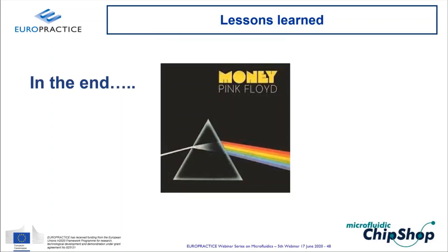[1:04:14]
The surface roughness obviously can be a challenge in rapid prototyping if you talk about 3D printing, both in stereolithography as well as in fused deposition modeling, unless you have these high-end machines from Nanoscribe or so. They of course make, again, optical surfaces, but then they can only make small parts.
Yeah, okay, thanks. Maybe if you don't mind, one last question then, if that's possible, to answer at least which polymers are preferred and why. Okay. If it would take you too far. Yeah. No. I mean, there's actually a fairly clear cut to that.
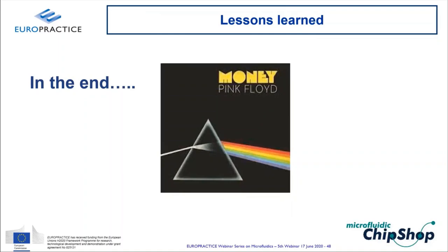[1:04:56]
There are typically, I would say, out what is out in the market and what we are using are basically five polymers. I would say 50% would be the olefinic polymer COC, COP. Reason why people like to use them is very good optical properties, very low autofluorescence, initially high contact angle, so highly hydrophobic, which basically means low intrinsic protein adsorption, so low unspecific binding, and they are good to mold. So these are compelling arguments. Drawback is they are a little bit more expensive than the classical commodity plastics. So at 50%, I would say COC, COP.
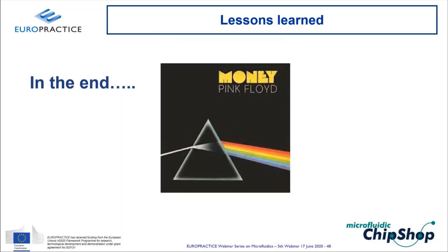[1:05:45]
The next group would be polycarbonate and polystyrene as the more conventional polymers. Polycarbonate, clearly nice optical properties, high temperature of use. So for example, if you have a device in which you would like to do PCR, polycarbonate would be a good material to use. Drawback is higher autofluorescence compared to COC, COP. Polycarbonate is not so easy to machine if you do prototyping. That would be the two limitations. But it's cheaper than COC, COP.
Polystyrene is a material which a lot of the, let's say, biologists are using simply because they are used to that material. And all the petri dishes were for decades made in polystyrene, so they are well known with the surface chemistry. Low cost polymer, but not so good optical properties compared to the olefinic polymers.
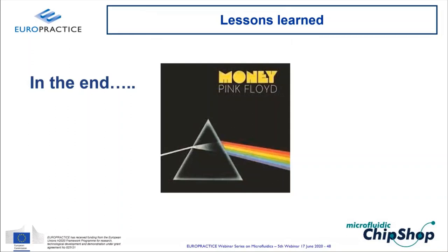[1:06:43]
And the fifth one would be PMMA, acrylic. That has been the material which was the first one to be used in, let's say, thermoplastic polymer microfabrication. Good to machine, low cost. Drawback is it's very, very sensitive towards organic reagents, organic solvents. So even a low concentration organic solvent will immediately lead to stress cracking. So for this reason, it's nowadays actually very little used in microfluidics. But if you only have an aqueous solution, then that's also an acceptable material.